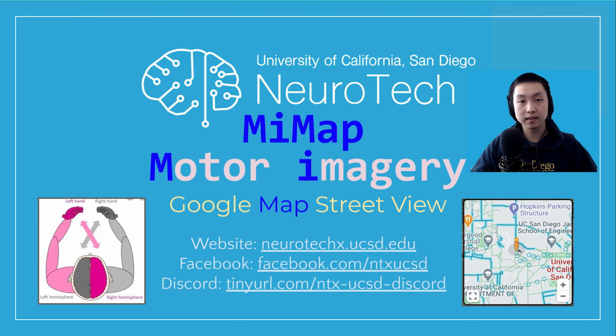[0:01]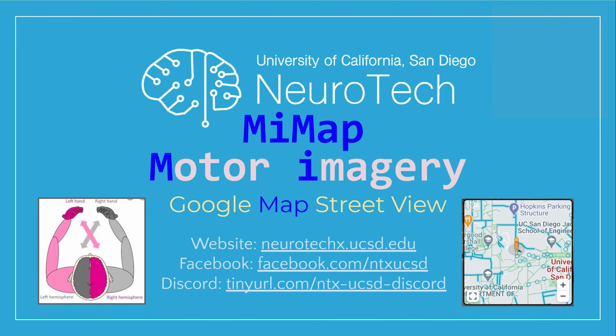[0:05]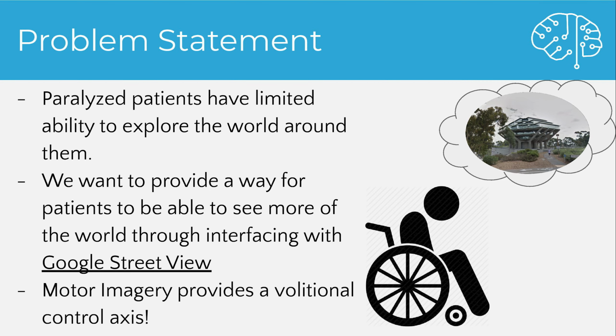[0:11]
We are NeuroTech at UCSD, and this is our motor imagery controlled app for Google Street View, MiMap. With the onset of COVID, we miss going to campus and exploring the outdoors, but paralyzed patients can't even use Google Maps. Brain-computer interfaces can be very helpful for inputting general commands on a computer and can be used to play Minecraft, explore Google Street View, and control other apps that require a limited set of input commands.
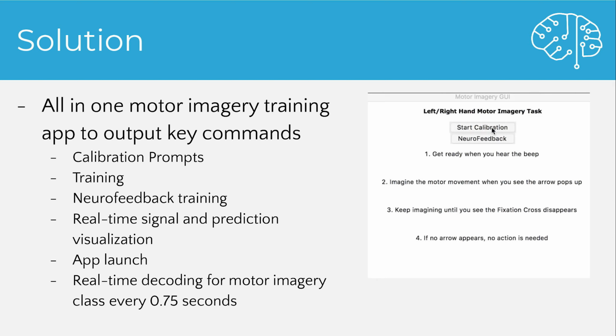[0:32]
We wanted to build a system that would enable a paralyzed patient to input more commands on the computer. Our solution was to provide an all-in-one motor imagery training app that would output key commands given the neural data.
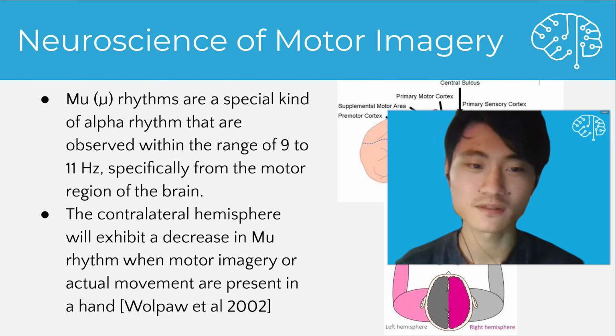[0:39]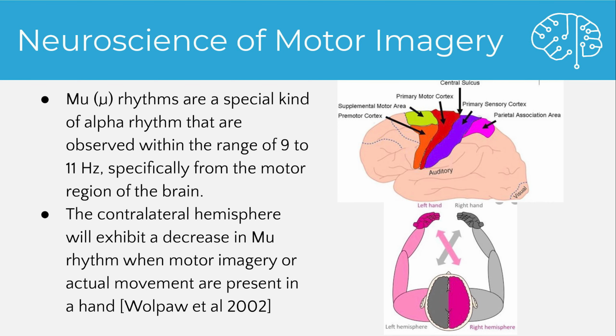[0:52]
In order to gain useful insights from the EEG signal, we first looked at what happens to the brain during the motor imagery task. Our movements of the arms are closely associated with the primary motor cortex, and multiple rhythms change differently during the actual or imagined motor movements, notably the mu rhythm. When we move our arms or imagine doing it, the mu rhythm, which is around 9 to 11 Hz, decreases its power in the contralateral side.
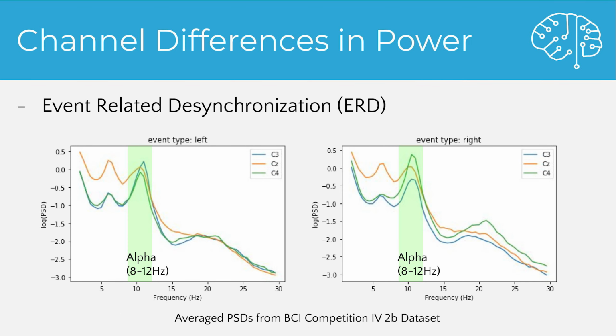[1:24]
And indeed, after we take the average power spectral density for left versus right-hand trials in the BCI competition dataset, there is a notable power difference in the mu rhythm between these two trial types. There is a significant decrease in alpha power in the C4 electrode for the left-hand trials and decrease in C3 for the right-hand trials. And because of the consistent predictability of such change in response to mental processes for the task, and the fact that it's common across most individuals, it has its own term called event-related synchronization or desynchronization.
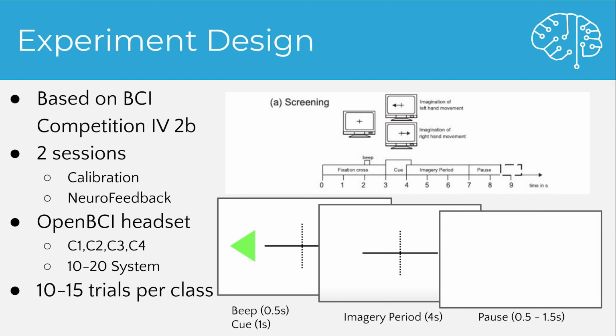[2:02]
To ensure the success of this project, I tried to keep our experiment design as close to the original study as possible. Inside each trial of the original study, a fixation cross is first shown at the center of the screen, followed by a beep. And 1 second later, either a left or a right arrow is presented to prompt the subject to imagine a motor movement with the corresponding arm.
Note that the movement itself can be of the choice of the subject, but they are instructed to imagine the muscle movement rather than the pictorial view of it, and try to refrain from actually moving the arm itself. This should ensure that any insights from the data is actually caused by the motor imagery rather than the muscle movement itself.
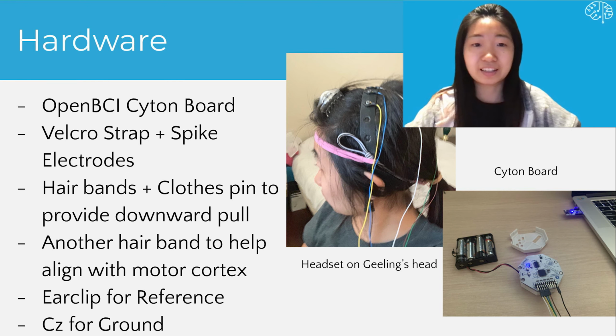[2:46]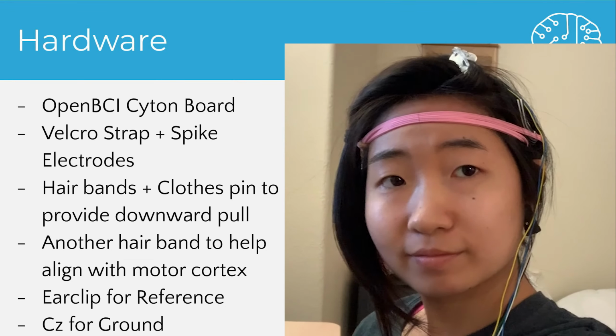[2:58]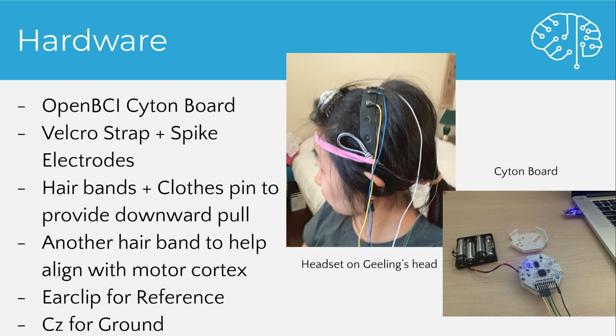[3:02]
The headset for this project was hacked together by using the Velcro strip from the OpenBCI kit, along with the spiky electrodes to make the device a dry EEG headset. Additional hairbands were used to hold the Velcro strip down and in alignment with the motor cortex. This was important to make sure we get the most signal out of the motor cortex region for distinguishing motor imagery. An ear clip was used for reference and CZ was used for ground.
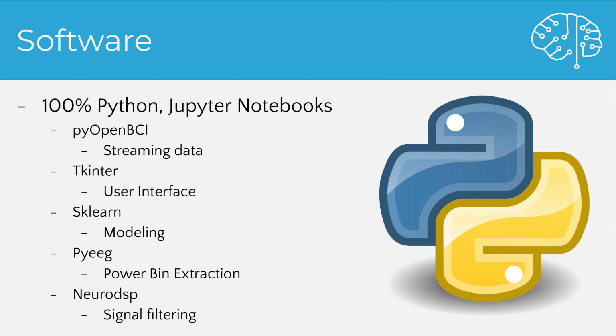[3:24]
The software for this app is developed completely using Python. The individual components such as the classification algorithm and the calibration app are tested individually during the development using Jupyter Notebook. Here's a list of the specific packages we use for this app.
OpenBCI is used to work with our specific headset. Tkinter is a Python graphics library which we use to program the graphical user interface for our app. sklearn is used to program the classification model, and functions in PyEEG is used to implement the feature extraction critical to this project. Last but not least, NeuroDSP is used for the initial signal filtering.
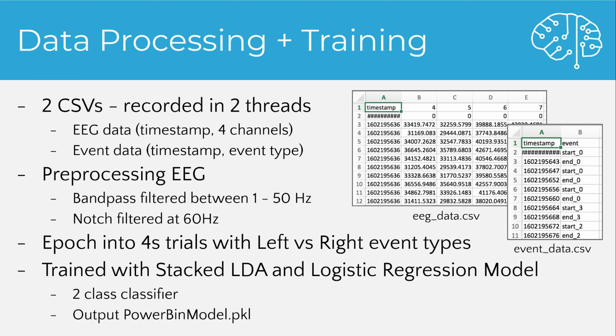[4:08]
To train the model, we first need to provide a standardized way of formatting the dataset. Our in-house dataset should look very similar to the BCI competition dataset, as we first use that to test our classification models before using the same models on our in-house dataset.
Of course, as the finished app records the EEG behind the scenes, it saves the dataset in the same format as well. The dataset consists of two spreadsheets, the EEG data and the event data. The EEG data contains the electrode readings from the 4 electrodes every 4 milliseconds, and the event data logs the trial types, a timestamp at the beginning of each trial.
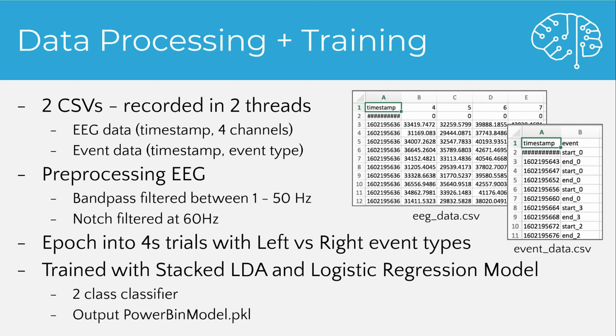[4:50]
Before training the model, the dataset is first cleaned and bandpassed from 1 to 50 Hz and notch filtered at 60 Hz to eliminate noises. Then using the event data, we extract 4-second chunks of EEG data from each trial and save them onto a data frame, which is then used as the training epochs. In order for the algorithm to classify left versus right-hand trials, useful features need to be extracted from these epochs. But once we obtain those features, the training itself is very simple.
The algorithm stacks linear discriminant analysis and logistic regression and chooses whichever gives the better validation score. Once the training is complete, the model is saved onto a pickle file for user feedback as well as the actual map navigation function. Only 20 trials is sufficient for the training of the model, and all of this training can be completed in less than 3 seconds.
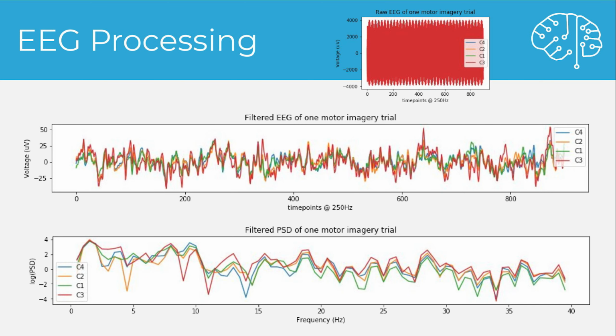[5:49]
EEG pre-processing is an important step for this project because otherwise we would get data that looks like the red blob in the upper right corner of the slide. After filtering between 1 and 50 Hz and notch filtering at 60 Hz, we have something that looks much more reasonable for EEG. Taking the log of the power spectral density, we can see that there is a minor drop-off in the power for higher frequencies, which is what we expect to see for EEG data.
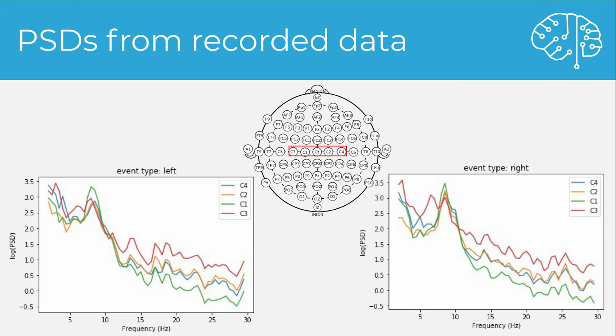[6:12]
The power spectral densities, or PSDs, for the recorded data were further analyzed for each event type. Here you can see the PSDs from 15 trials of each class averaged for each channel to see how the average power values vary between the two classes. We can see that in the left-hand motor imagery case, the contralateral electrodes C2 and C4 exhibited smaller powers in the alpha range. The effect for the right-hand motor imagery case was less apparent visually, but could be potentially explained by the narrow alpha peaks in C1 and C3 electrodes.
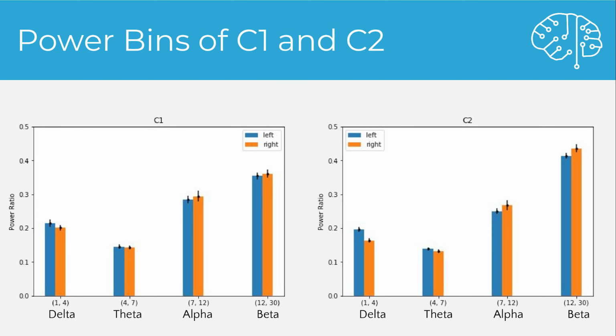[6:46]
This is a power bin analysis of two electrodes, C1 and C2. These graphs allow us to more clearly see the differences in the classes when we want to use them in our model. We can see here that the alpha range for C1 and C2 may not actually be the best differentiators of the two classes due to the large standard error of means. Rather, as we will see later, the C2 delta range was one of the more prominent differentiators of the two classes. This emphasizes the importance of having a training session each time the user puts the headset on because the features that separate left and right motor imagery can change depending on the session and setup.
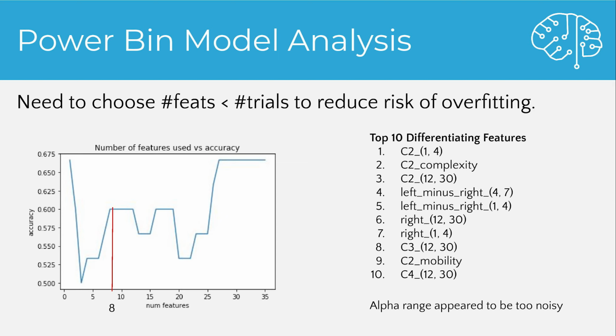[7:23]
With the one dataset we were able to collect, the PowerBin model was able to perform with approximately 60% accuracy, with the features on the right being the top 10 differentiating features. The alpha range appeared to be too noisy to be helpful in this case, but here we can see that the C2 electrode for delta range was among the top. By selecting the top 8 features for our model, we chose the number of features to be less than the number of trials to reduce the risk of overfitting.
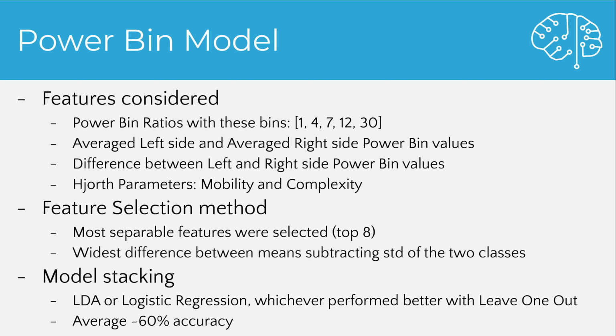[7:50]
After analyzing the data, we built up the PowerBin model to classify our EEG data. We used PowerBin ratios that we saw earlier, along with average left side and right side electrodes for these PowerBin values, and the difference between these averages as parameters. We also calculated the Hjorth parameters for the EEG data, one being mobility, which is the standard deviation of the power spectral density, and complexity being the similarity to a regular sine wave.
Feature selection was done by finding the most separable features, and this was calculated based on the widest difference between the means of the two classes and subtracting the standard deviation for these two classes on those features. Additionally, we did model stacking in which we selected the best classification model that performed better with a leave one out methodology, and in the end, our model was able to average approximately 60% accuracy.
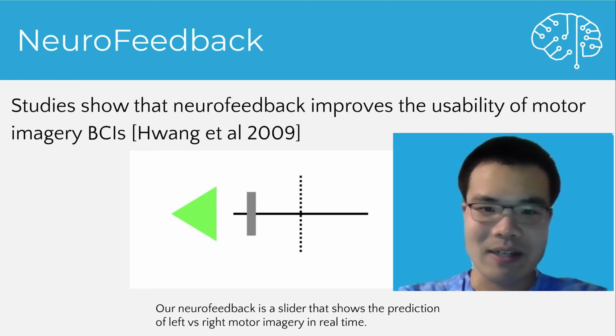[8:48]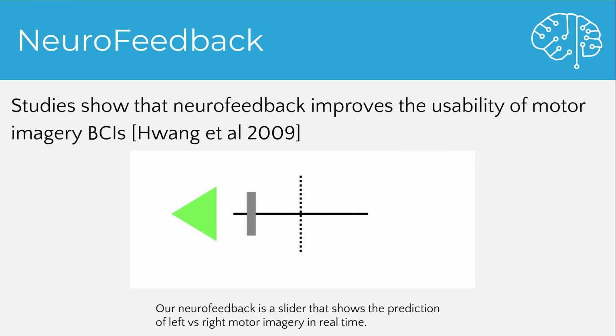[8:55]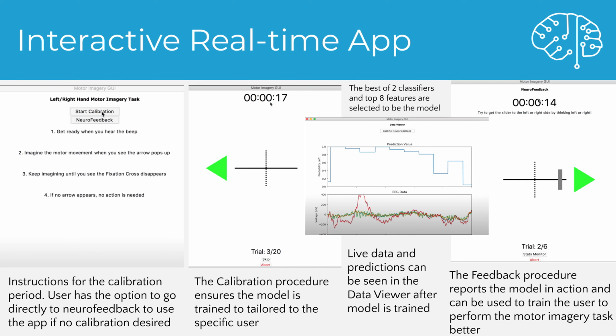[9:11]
In regards to neurofeedback, studies have shown that neurofeedback improves the usability of motor imagery BCIs. So, our neurofeedback is just a slider that shows the prediction of left versus right motor imagery in real time. In regards to what our interactive real-time app looks like, we have these 4 screenshots provided below.
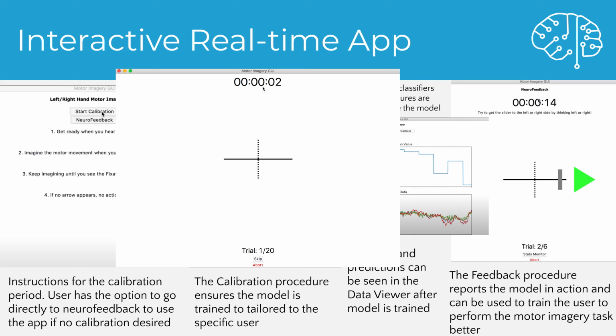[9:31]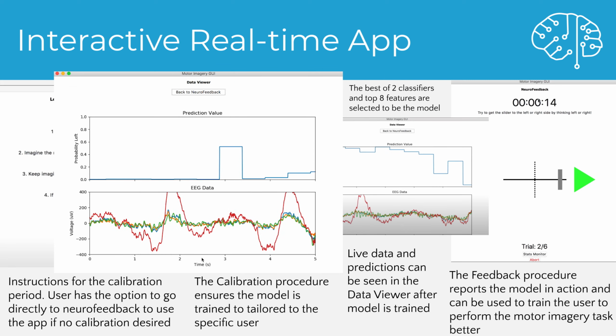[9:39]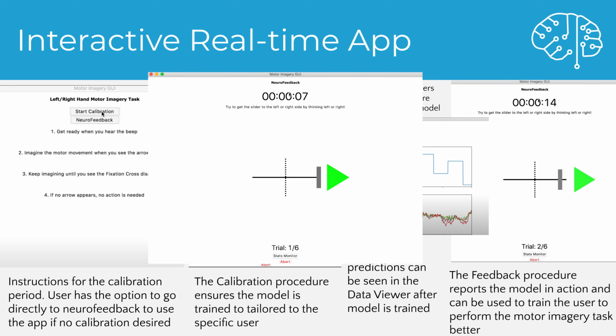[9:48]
In the screenshot to the leftmost, we basically have instructions for the calibration period. Users have the option to go directly to neurofeedback to use the app if no calibration is desired. In the next image, we have the calibration procedure, which ensures the model is trained to tailor to the specific user. In the third image, we have live data and predictions that can be seen in the data viewer after the model is trained. And finally, we have the feedback procedure, which reports the model in action and can be used to train the user to perform the motor imagery task better.
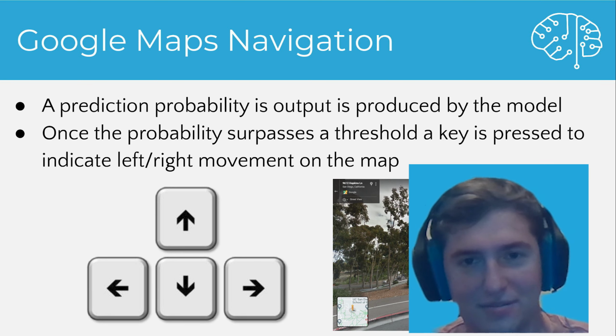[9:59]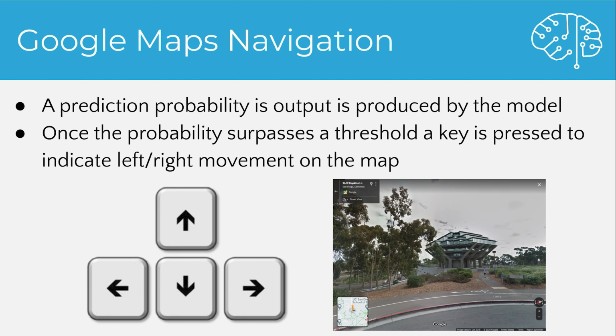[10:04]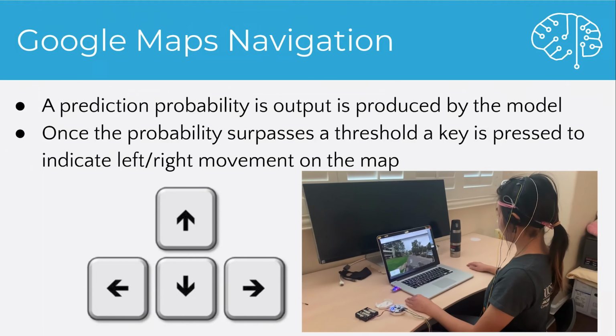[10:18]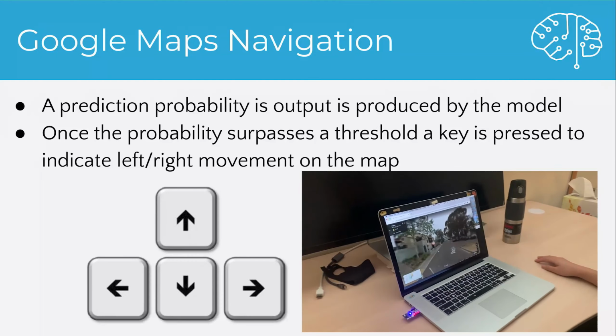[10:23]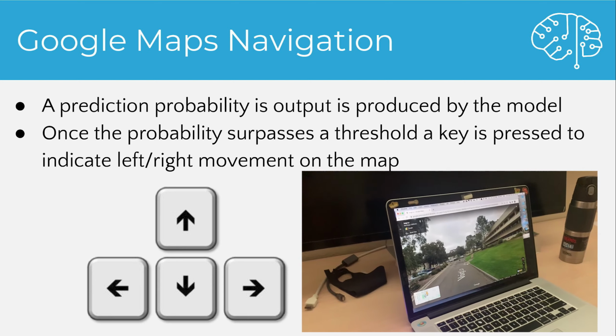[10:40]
I worked on model research as well as output commands in the output pipeline. In order to determine which key would be pressed by the computer based on the operator, we use prediction probability. So once the operator thought they wanted to go left or right a certain amount, as determined by the model, a certain threshold would be hit and the key would be pressed in correlation based on left-right movement. In addition, there was a third action that is characterized by not really moving at all, so kind of staying in the middle between left and right, and that can correspond to any other key, whether it be up, down, enter, spacebar, whatever is really desired by the operator, whatever command they could use within Google Maps.
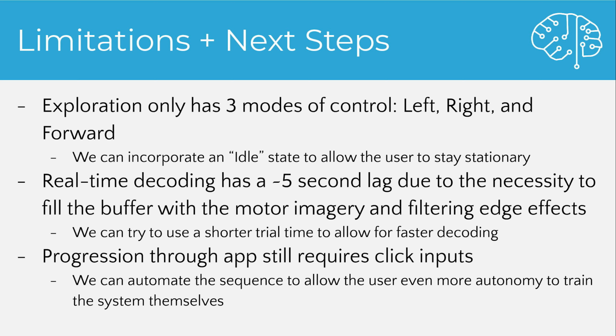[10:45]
So in terms of limitations, I'd say we have three main limitations. The first being that in terms of control, we only have three modes currently: left, right, and since we use the up arrow as our third command that the operator can give, it only gives us forward. So something we can do is incorporate an idle state, allowing the user to stay stationary without having to move back and forth to see one address or one landmark.
Another pretty big issue is that real-time decoding has a significant, about 5-second lag due to the necessity to fill that buffer with motor imagery and filtering edge effects. We can try using a shorter time trial to allow for faster decoding. That really depends on the way that the model responds, but I'm sure there is a solution that will keep the accuracy that we have while shortening that lag.
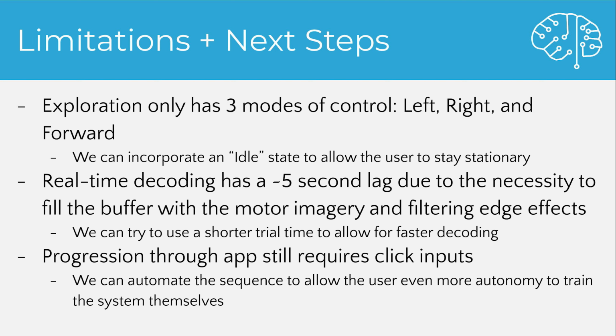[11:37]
The last issue, which is a very minor issue, is progression through the app. Actually getting to Google Maps where you can use the BCI commands requires click inputs. And that's an easy fix. We can just automate the sequence to allow the user even more autonomy. So once they've automatically gone through a training sequence, which we can set up as well, it will progress to Google Maps. So there will be no clicks involved, maybe just hitting a space bar or something to start the process. But after that, it'll be fully automated for the user for accessibility reasons.
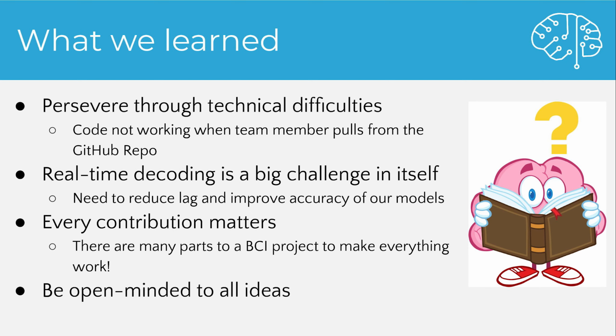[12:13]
So we have basically learned a lot when we worked on this project. But the most important things that we've learned are to persevere through technical difficulties, because we encountered issues where code was not working when team members pulled from the GitHub repository. The second important thing we learned is that real-time decoding is a big challenge in itself, because we need to reduce lag and improve the accuracy of our models. Third, every contribution matters because there are many parts to a BCI project to make everything work. And most importantly, be open-minded to all ideas.